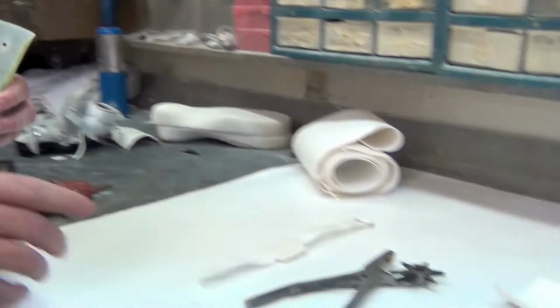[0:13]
Hi, I'm Tom Malone with the Orthotic and Prosthetic Lab, and today we're going to be demonstrating how to install an iButton or a temperature logger into a Dobbs Clubfoot AFO.
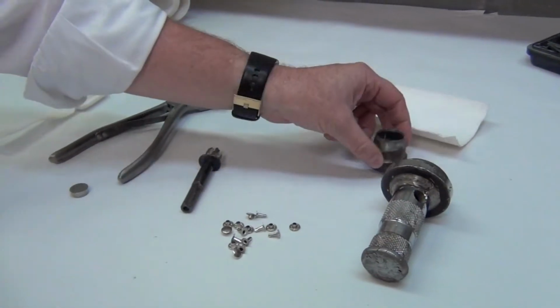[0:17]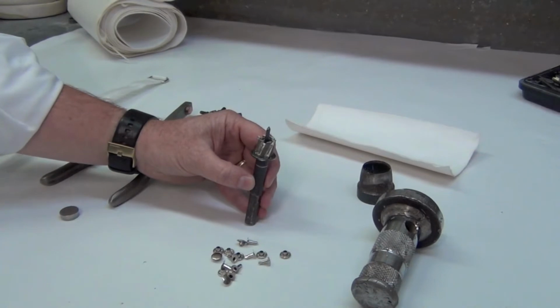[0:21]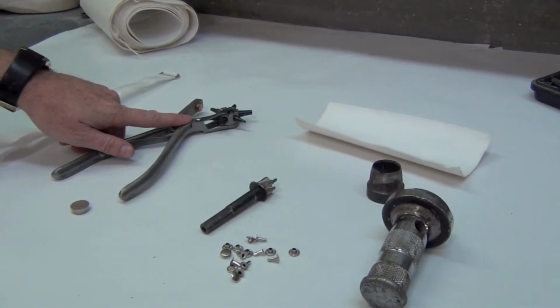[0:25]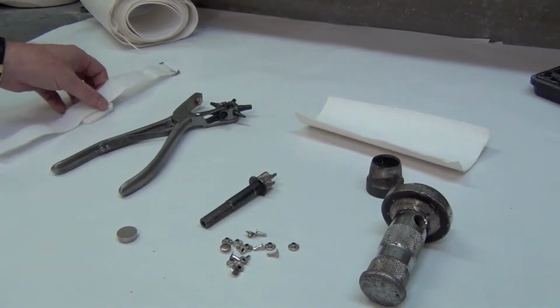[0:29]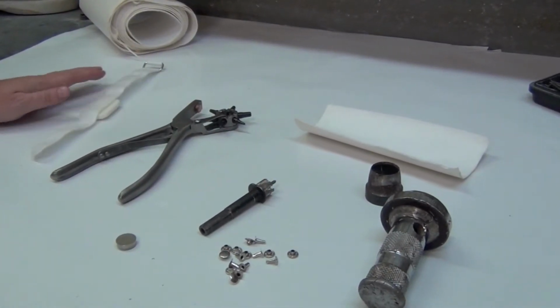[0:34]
Now, the materials we're going to need to do this are a hollow punch with a 1-inch bit on it, some speedy rivets, a 9/16 rotocut hole cutter, a leather punch, and of course, our iButton, as well as a 1-inch padded Velcro strap. Those are the materials we're going to need, and now we'll demonstrate how to install it.
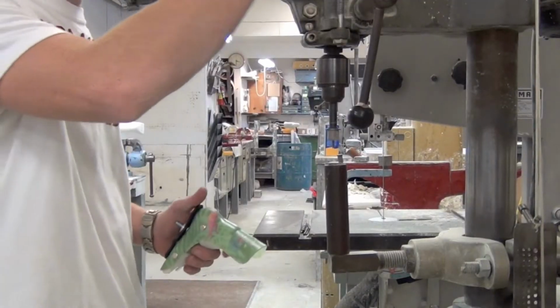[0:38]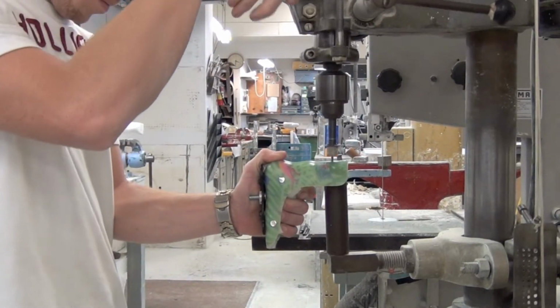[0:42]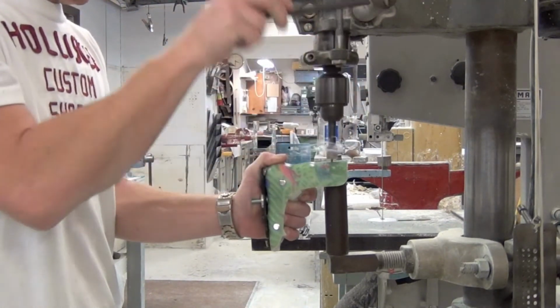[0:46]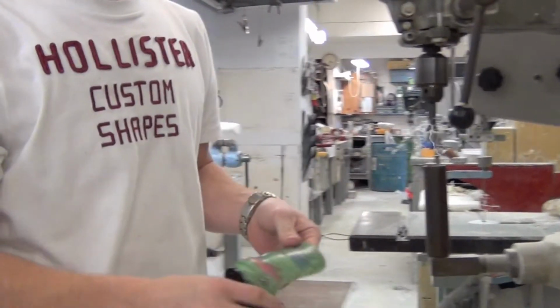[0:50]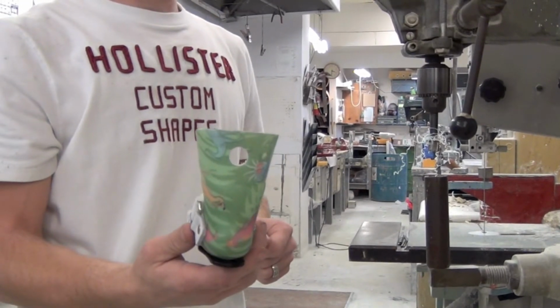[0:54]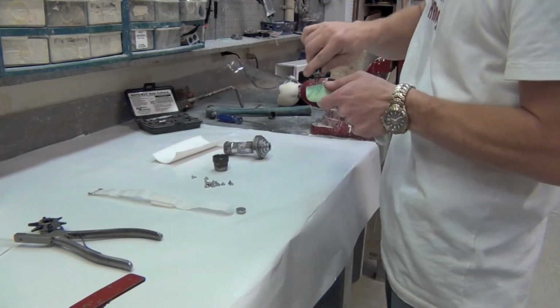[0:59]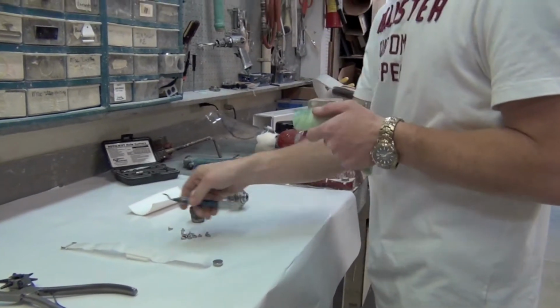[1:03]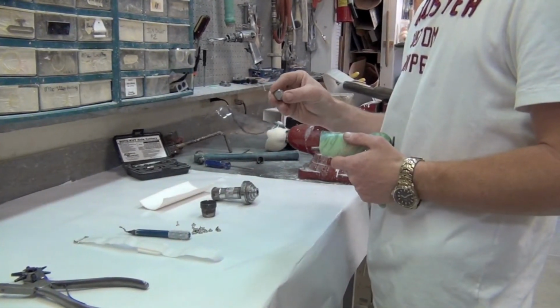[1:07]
Here we are drilling a hole in the calf section of the AFO with our Roto-Kut. I'm going to hold that up, and it looks just like that. That's where our I-button's going to go. Okay, after drilling the hole, we're going to run a deburring tool around the edges just to smooth everything up. And now we're going to get ready to place our I-button inside the hole that we just drilled out.
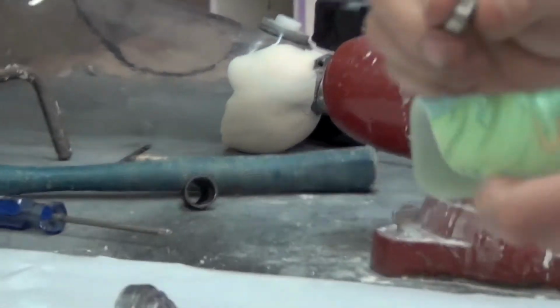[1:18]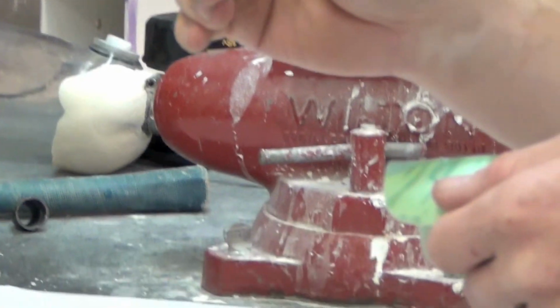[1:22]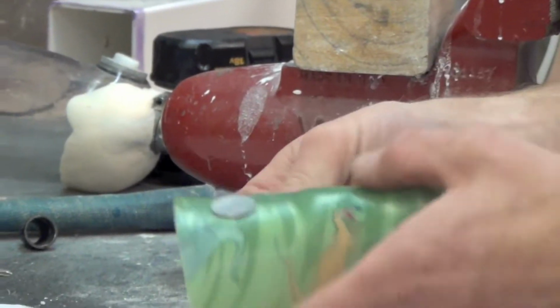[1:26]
This particular iButton is a DS1922L F5 canister. Let me zoom in on that so you can get a good look at it. So that's our iButton that we're going to be installing today. And it just pops right in the back of the AFO, like that.
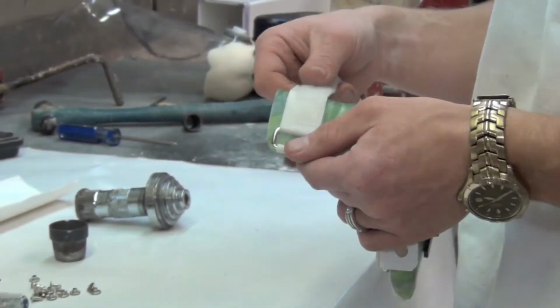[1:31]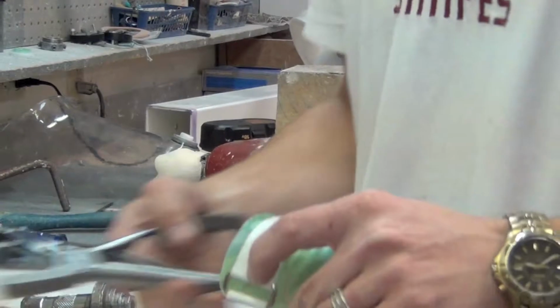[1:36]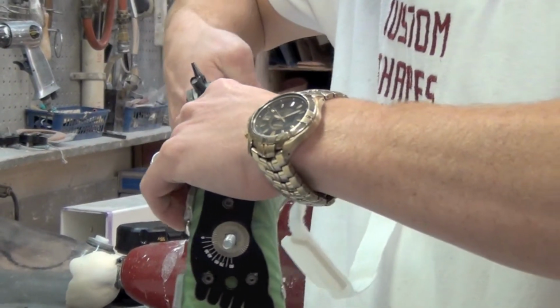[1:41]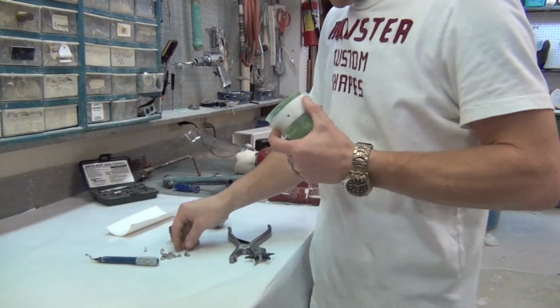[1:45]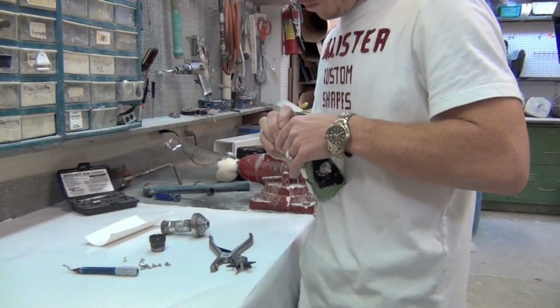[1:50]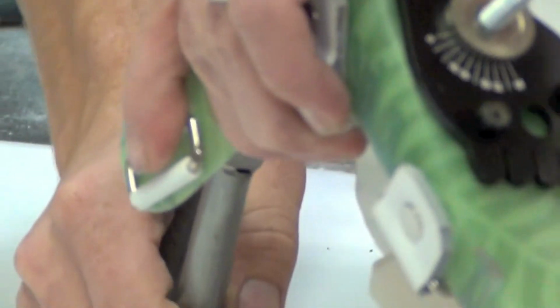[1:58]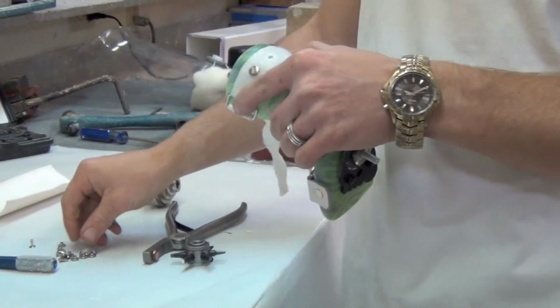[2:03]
Now we're getting ready to install our Velcro strap. And we're going to be riveting the Velcro strap, one rivet on each side of it to hold the eye button in. So in order to get it out, you will have to remove the Velcro strap. And here he is just punching a hole on each side to get ready to put the rivets through. Punches the other hole.
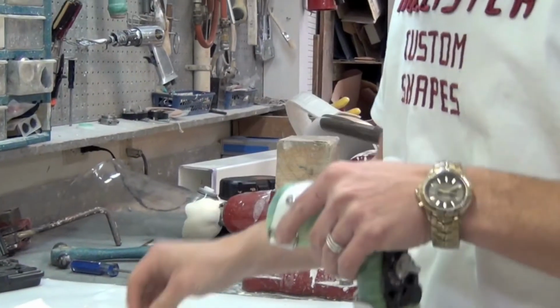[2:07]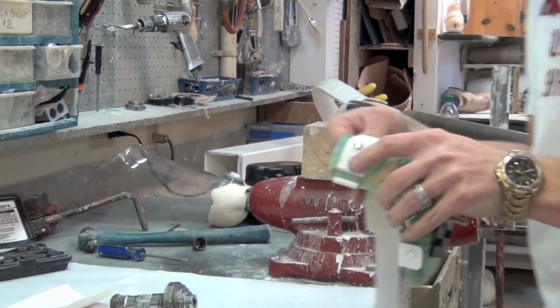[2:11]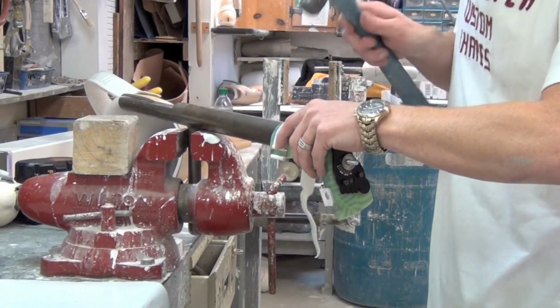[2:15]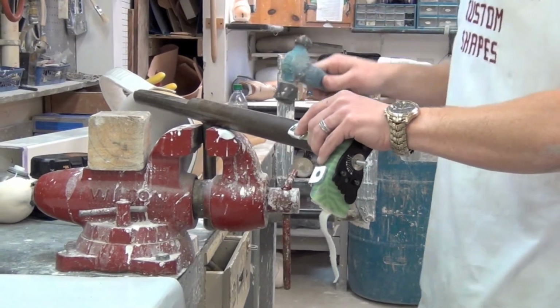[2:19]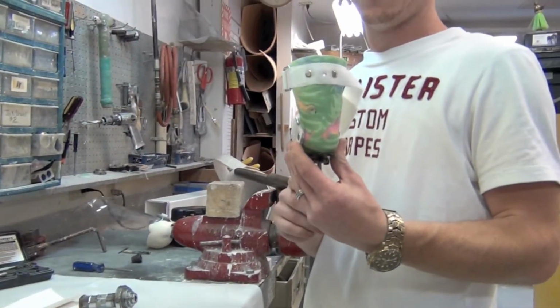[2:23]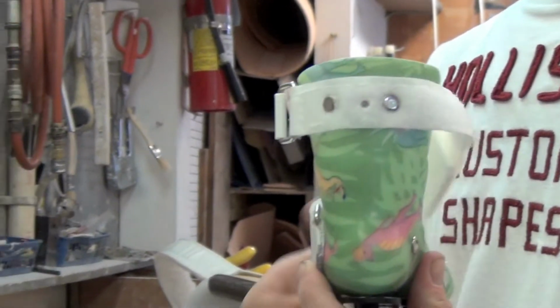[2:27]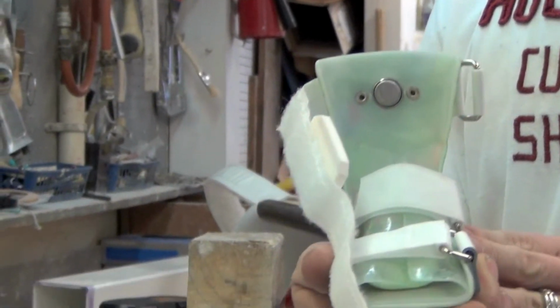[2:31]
And these are just speedy rivets. And we go over to the rivet bar and he's going to set the rivets. And you want to hold that up, Pat, so we can kind of see. Let me zoom in on it. And you can kind of see each one with the hole in the middle is where the eye logger is. Just like that.
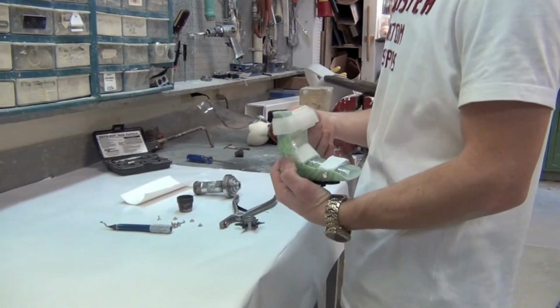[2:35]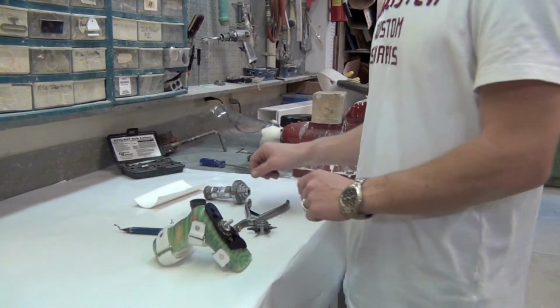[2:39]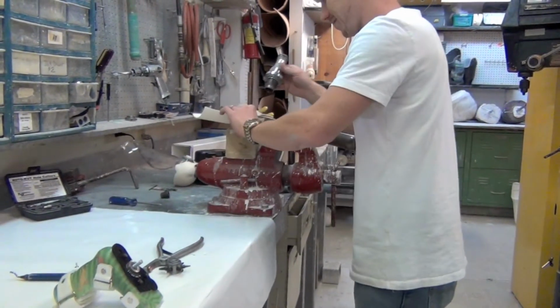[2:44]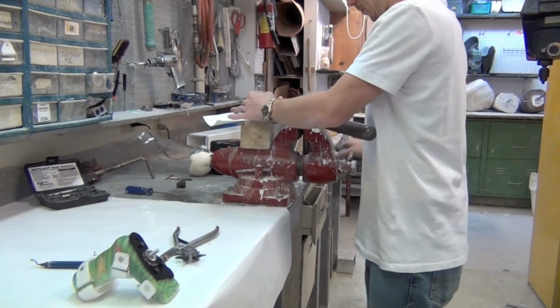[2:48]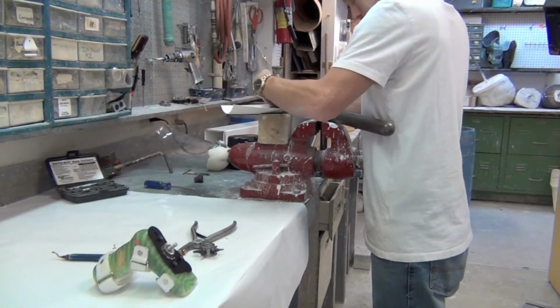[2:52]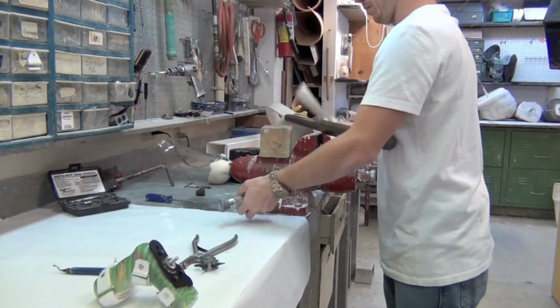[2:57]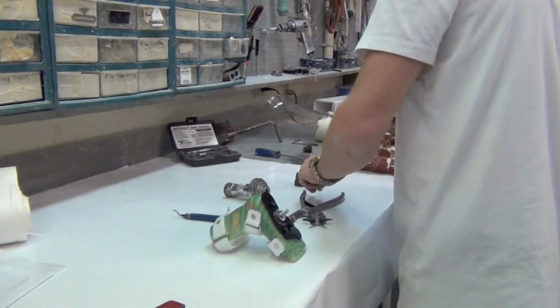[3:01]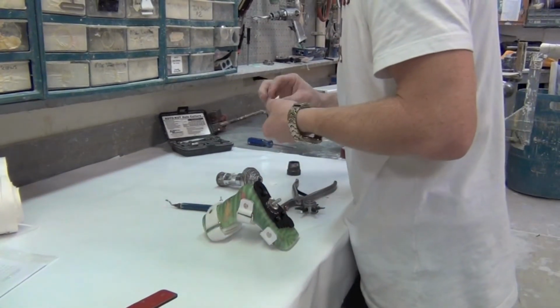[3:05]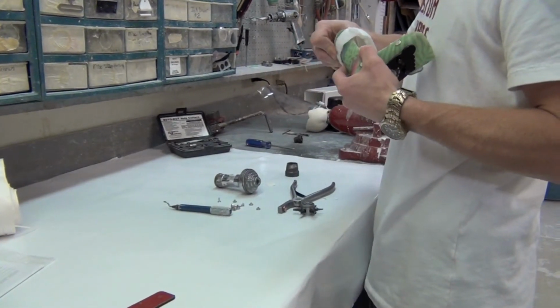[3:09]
We want to put a pad over the inside of it. So we're going to take our hole punch. We're going to punch out a 1-inch pad of moleskin. And we're going to take that piece of moleskin and we're going to apply it to the inside of the AFO just to cover up the iButton, keep all the sweat and all the perspiration off the actual device. And it's self-sticking, so it'll go right over that iButton.
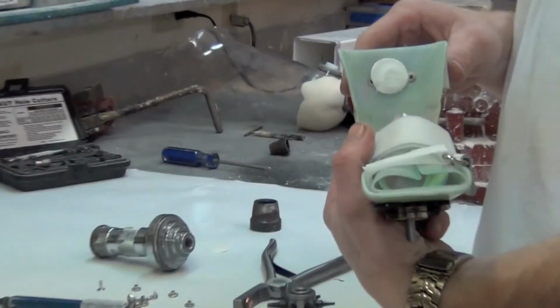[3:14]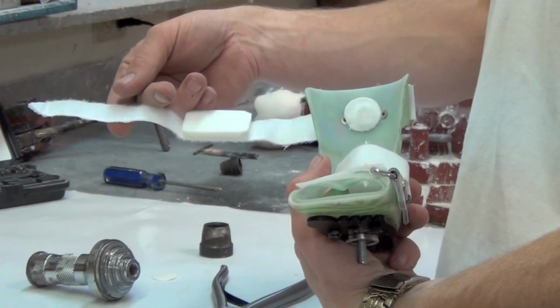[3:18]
And then, let me zoom in on that. Looks just like that. And that's how you install an I-Button into a Dobbs Clubfoot AFO.